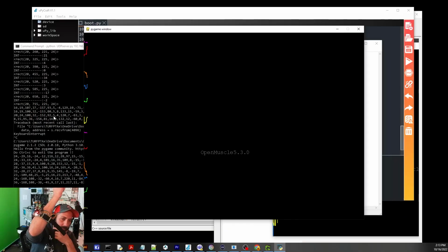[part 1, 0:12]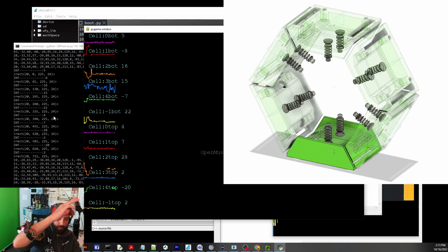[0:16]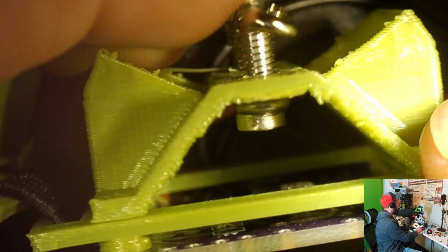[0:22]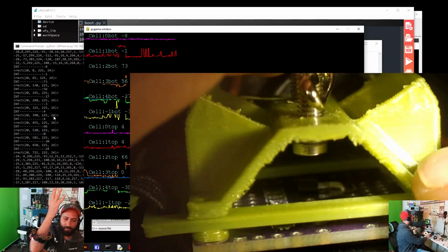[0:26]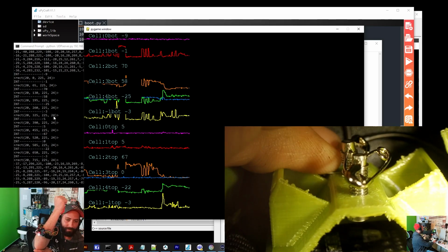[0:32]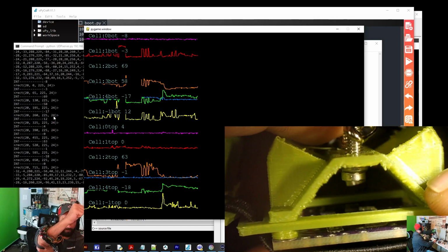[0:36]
So what it's doing is it has 12 pistons on springs that are connected to an earth magnet that is driven to and from a Hall effect sensor. Yes, it's just the best way to detect muscle contractions is with a piston. A piston, a spring, and a Hall effect sensor. Because Hall effect sensors are good at measuring the distance that the magnet has from it. There's redundancy that you can have.
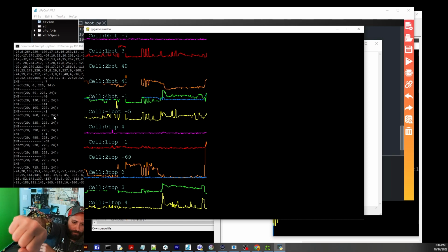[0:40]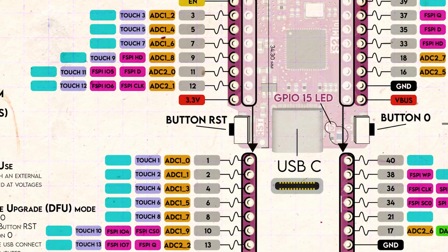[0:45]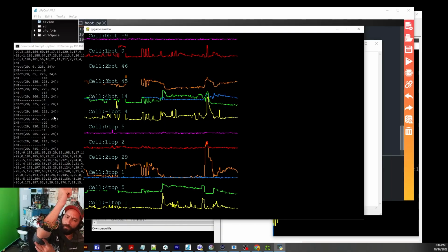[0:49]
It's completely open source. It costs about $9. I'm using the ESP32-S2 by Wemos. The first one, you can buy those for $2 each. The Hall effect sensors, I bought them at 40 cents each on Amazon. You can get them close to 10 cents each. The boards cost $11. I've got 50 of them.
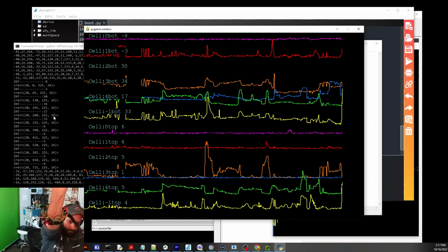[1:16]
And the plastic, I'm not sure. It's just 3D printed. Wires and clevis pins. So the clevis pins are the main mechanical apparatus. Clevis pins and springs. I'm using 20 gram MX Cherry switch springs. And so these are off the shelf components. There is no surface mounted soldering required. You just have to solder the wires themselves.
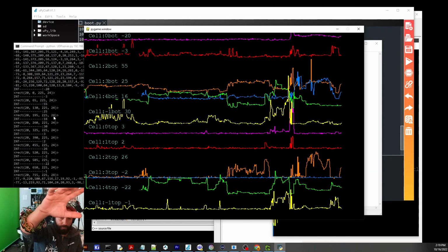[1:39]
So in essence, what this sensor does is it just looks for changes in the topology of your forearm by pressing pistons inward radially toward the forearm. And so when muscles contract, it moves these out of the way, and it's a detectable signal to an ADC. This is with the Hall effect sensors and an earth magnet. It's just ripe for the harvest of people using this for data to make better prosthetics.
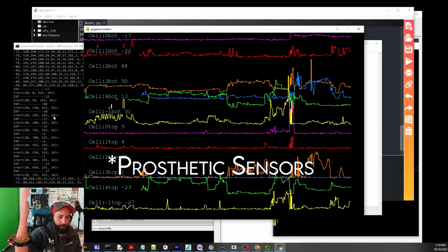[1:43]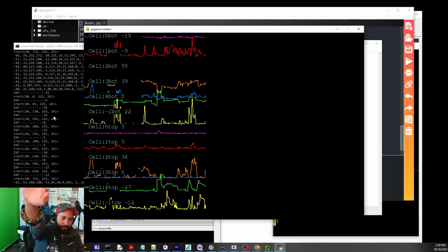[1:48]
That's why this is completely open source. So yeah, everything is available on oprosthetics.org. Follow the GitHub. I've been trying to upload the information.
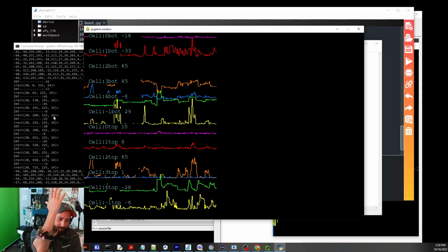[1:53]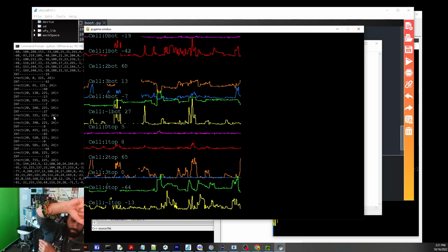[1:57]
There's just a ton of it. It's just me working. I'm looking for anyone to help that wants to. Join the fun. See if we can make a difference in this life.
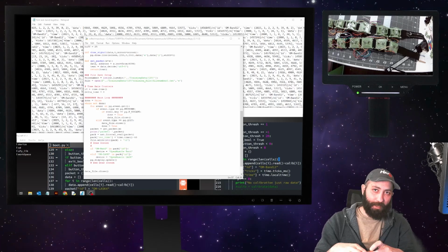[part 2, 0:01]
This weekend, I successfully created the LASK device, which is the label acquiring device. It is going to supply the label to the information that we get from Open Muscle. And so you see two different variations of the 12 sensor module. It's a 12 by 1 sensor where they're all in line, and then a 6 by 2 where they're stacked in cells of two vertically.
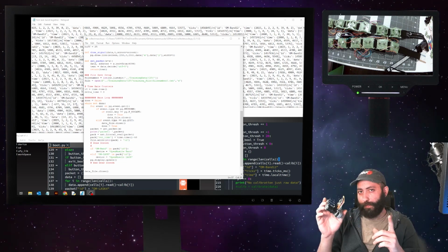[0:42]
The nice thing about Open Muscle is that it has rotational symmetry, so you might be able to glean enough data just from the sensor input to know what orientation it is. It does not have an accelerometer built in. It is meant just to see how accurate you can get with Hall effect sensors for a muscle contraction detection system, and how effective this label can be applied to regression. I don't think we'll do classification, but regression, machine learning, some deep learning, depending on how many hours we're going to have to acquire.
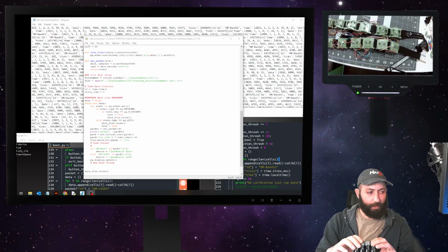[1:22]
The roadmap is quite fun. So we're going to be working on the label acquiring, or LASK, systems. There's this physical system, which is based off of the tension on these springs. And again, Hall effect sensors with magnets, same type of sensor that's on the Open Muscle devices. I'm going to be posting all that. There is already the raw input that I uploaded this weekend, but I'm going to be getting the framework together so that all the data can be sent to a centralized location. Also, I want to embed it in video because you can do some other machine learning label assistance by using gesture recognition with the video that's taken and have the timestamp of the values. So the timestamps are on each device.
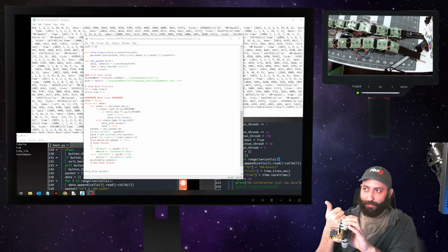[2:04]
So the packet starts, let's just start with the LASK device. It sends an actual dictionary, a string dictionary of the values as one parameter, the ticks of the processor, and the NTP time if it can grab it. And so that will get sent to the central computer. The Open Muscle band will also do the same thing. It will send the number of CPU ticks. It will also send its local time, whether or not it can grab the NTP time. That does seem to fail about 50% of the time. I'll try to rectify that.
And the collection computer, right now I'm using collectmuscle.py that's uploaded into the GitHub repository. That is taking both of those and saving them into a file, and it saves it sequentially into a file that also gets uploaded to GitHub every time I run it. So you can see the data live.
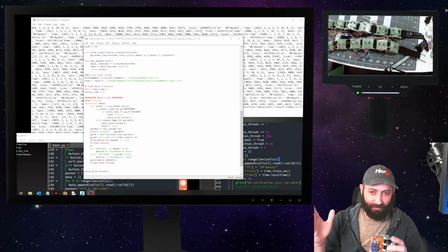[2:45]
I know Hackaday was kind of being cheeky when they said, hey, can we actually log into your Wi-Fi router? Yes, you can, because that's actually another device that I created just to be a middleman between this and the actual internet. So it's nice because these socket servers can traverse firewalls because we're using a port that's pretty high up and it's pretty normal looking traffic, nothing crazy about it. So even if you have a complex system, again, there's lots of refinement to be had in the future.
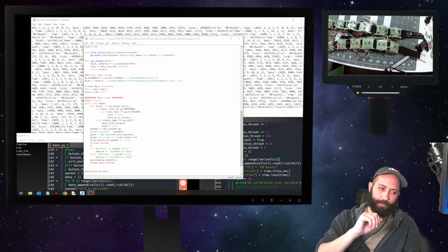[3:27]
I mostly just wanted to give you an update. There is a lot of stuff we're working on, by we, right now, it's just me. Some people have submitted ideas, and that is wonderful. It's helpful, but it's not necessarily the most helpful thing. What's helpful is people that are willing to put in the time to test it out. I haven't spent too much time documenting how to create one of these or this whole thing because no one has asked me to. Once I see the interest, I will start devoting some of my time.
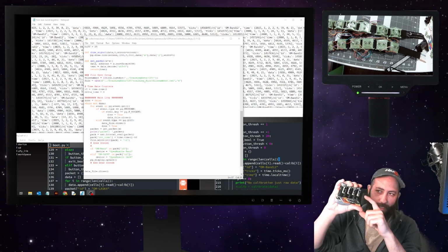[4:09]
But more important is to create a whole infrastructure of code, hardware, and software that people can use to capture machine learning data, right? This data is then to be fed into machine learning to get the intelligible signal from the band. So ultimately, that's why this device is labeling it. It says, hey, this finger is moving and it has to exert X number of newtons of force to press in, or compress, this spring. And that is pretty helpful. So that value we're just assigning in between 0 and 1, 1 being pressing down as hard as you can, 0 not pressing at all.
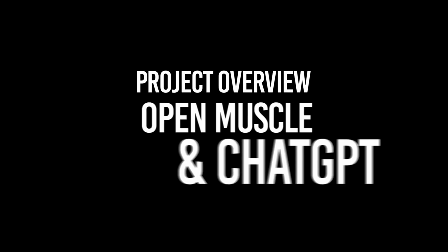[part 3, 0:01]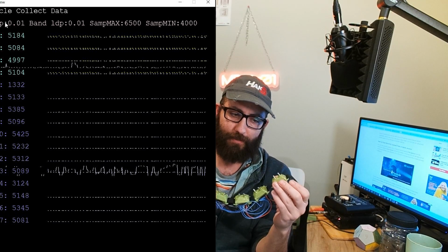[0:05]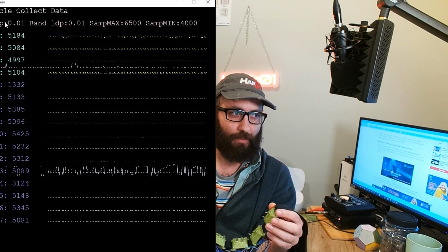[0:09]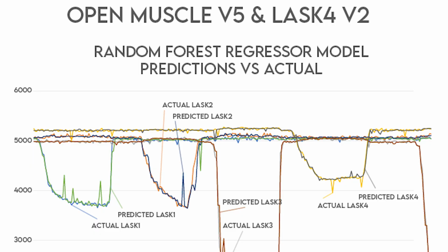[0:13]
For the open muscle project, we developed a low-cost sensor system for both the forearm muscles and for finger movements. We evaluated machine learning models to determine the efficacy of their predictions given our feature and label dataset. Getting clean and relevant data was difficult, and we had to adopt a more quantized or bite-sized approach.
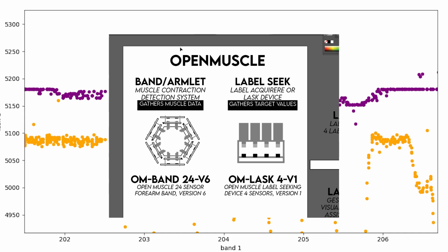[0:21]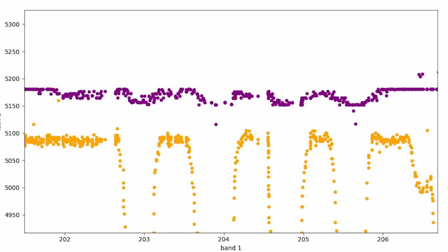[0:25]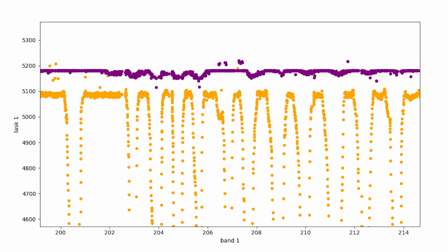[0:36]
Full disclosure, mostly this is just a team of me, ChatGPT, and a couple of friends that I bounce ideas off of. But finding an inexpensive bracelet design that was relatively low cost was cumbersome, and some open source projects were actually tried before the creation of the LASK system and the open muscle band.
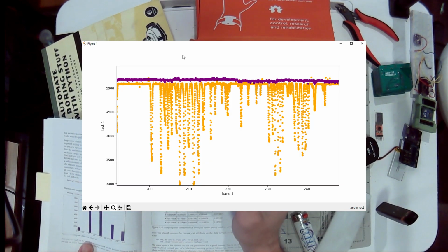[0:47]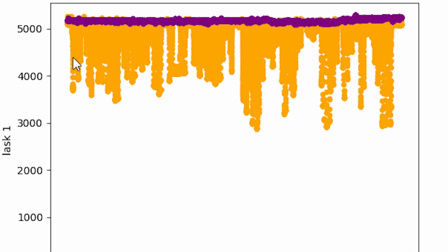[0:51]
The whole project rested on the idea that machine learning or artificial neural networks would be the one to tease out the meaningful data from the sensors located radially around the forearm muscles in a band form. This was, from inception, the way that we were going to determine which finger the person was trying to move.
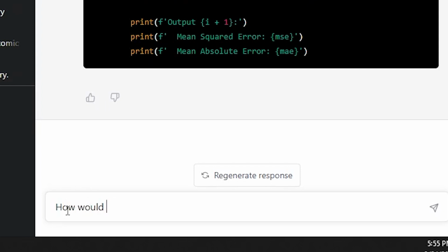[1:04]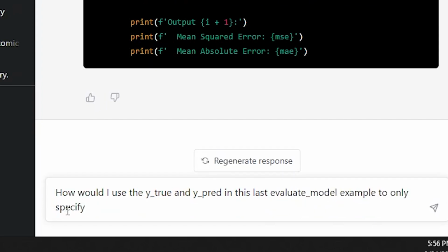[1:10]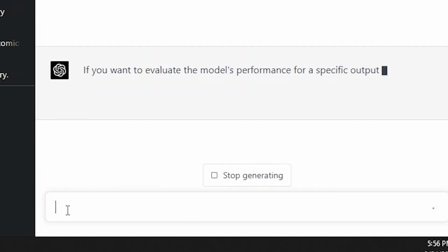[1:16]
The role of ChatGPT was paramount. It provided feedback for advanced machine learning questions. It provided sample code based off of my supplied parameters. It gave me advice for finding the right type of model to fit my already predefined data points. ChatGPT also helped with the outline for this video and to write articles based on my findings.
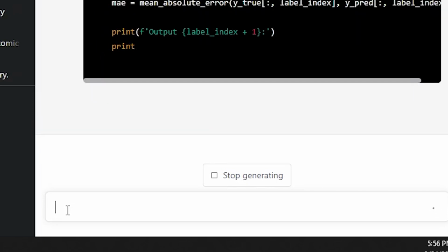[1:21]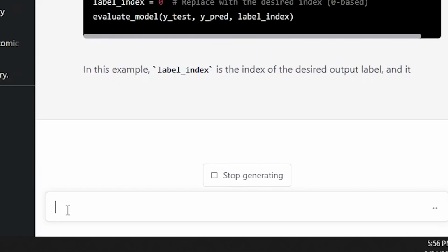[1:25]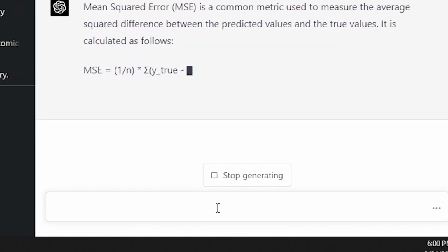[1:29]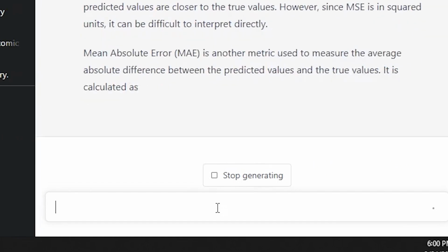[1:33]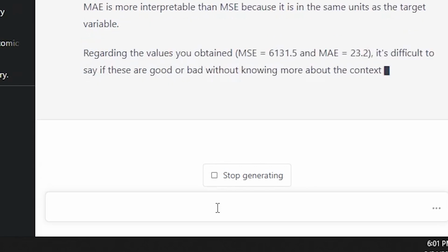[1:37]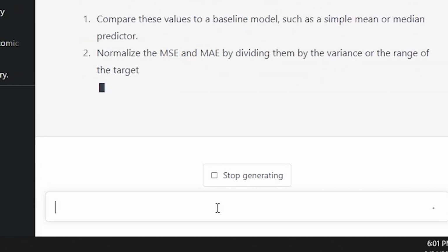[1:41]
The accuracy of the model was also found by asking ChatGPT what the output meant and how it could be improved. The greatest task that GPT-4 assisted me with was actually debugging the code, because I used some of the sample code that it provided. Most of it was written entirely by me, and I just simply copy and pasted the error output, and it was quick to identify the cause and a potential solution.
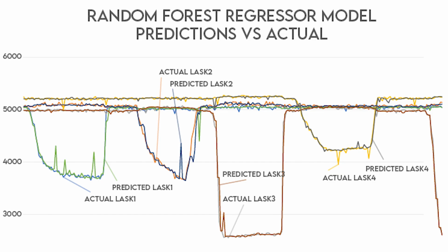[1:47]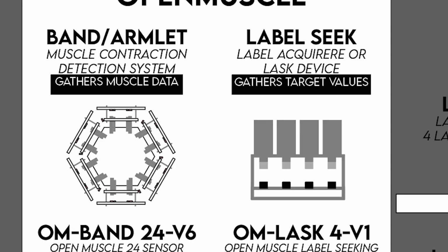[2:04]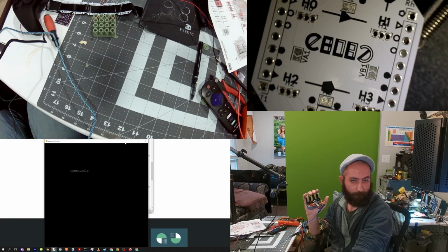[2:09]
The data collection and model training process were relatively straightforward. I had already constructed the basic operating system for the open muscle band and the LASK system to send all the data over UDP packets. All these UDP packets were sent, and a receiving program that was a Python listening program converted those into JSON values that were saved in a text file. From that text file, they were converted to a CSV file, and they were matched in pairs, and some of the data was omitted. Overall, we received about 100 samples per second, half of which was thrown out.
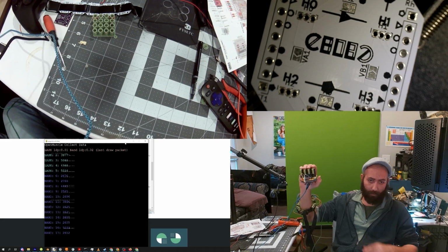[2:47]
Once I had this data set in a program, GPT-4 suggested three different training models for my data. At first, it only had me enter in one variable and one output, so one feature and one label. I specified I had 12 sensor datas, each with a timestamp, and 4 label datas with a timestamp as well. It provided generic code that I was able to modify and successfully train 3 different models.
The first of which was a logistic regression. The second was a SGD classifier. I wanted to see the training progress. And lastly, the random forest regressor was ultimately the one I used to proceed for the rest of my project.
The training dataset was small and only 10 megabytes in size, and taken over the course of about 5 to 10 minutes. The data was not very large, and it was just a preliminary test to see how the whole process worked. The noise from the open muscle band was significant, so the error rate was not expected to be very good from the start. It was almost a worst-case scenario going in.
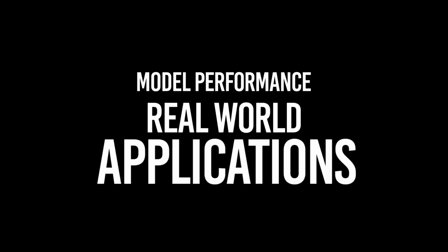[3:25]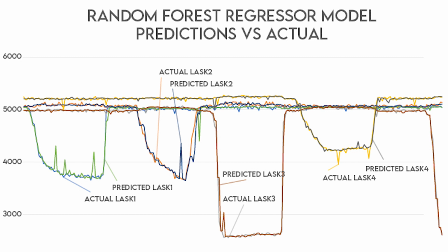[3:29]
Model performance in real-world applications. The mean average error after I did the initial training was roughly 25, which equates to a 12% error rate, given that the output for the LASK system was in between 5200 and 5500. This was done on an 80%-20% split like normal, where we trained it on 80% of the data and 20% was used to test it.
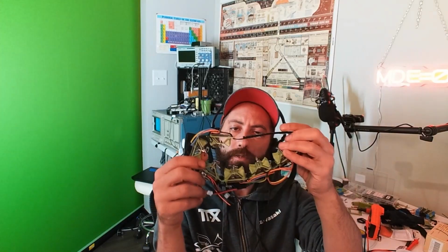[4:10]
After the model was trained, it was saved using the Pickle Python library. The model was then able to be used for live predictions. ChatGPT did give a decent outline of this process, but most of the code was done by me, and ChatGPT-4 mostly helped with troubleshooting, and it did so quite effectively.
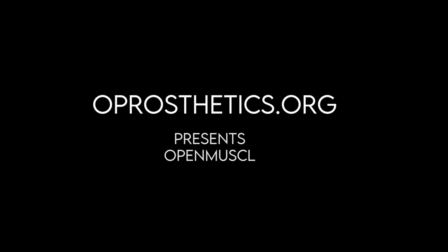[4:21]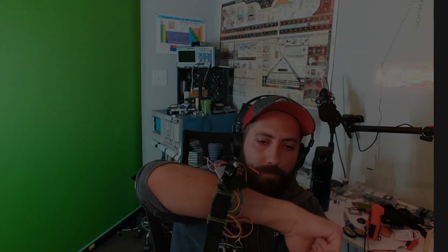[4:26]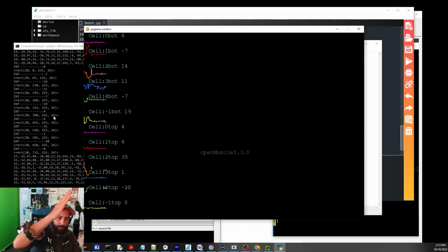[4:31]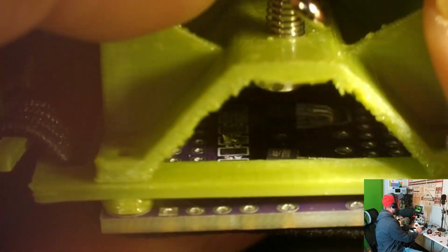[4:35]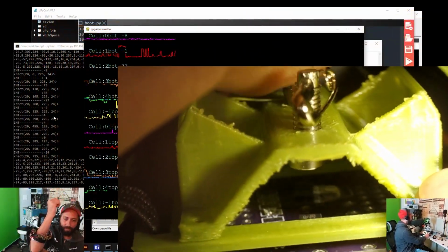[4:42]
I started this project knowing just that other machine learning systems, given their input and their output, could easily be applied to the biometrics or the prosthetics industry. The impact of this system, having been able to detect finger movements on a noisy sensor with minimal training data, shows a giant potential. Low-cost sensors for prosthetic devices and a system that helps anonymize the data and host featured and labeled data for everyone could be used to provide an impact to help many people and the industry as a whole. I want you to tell me what you think.
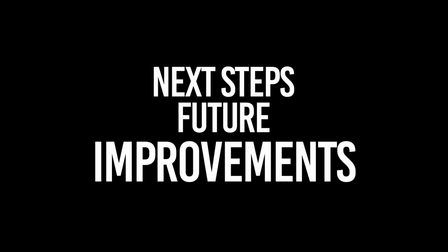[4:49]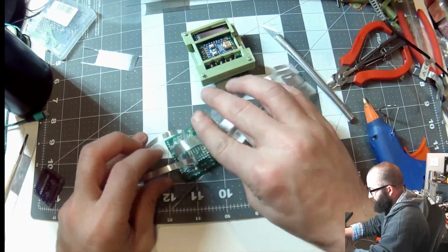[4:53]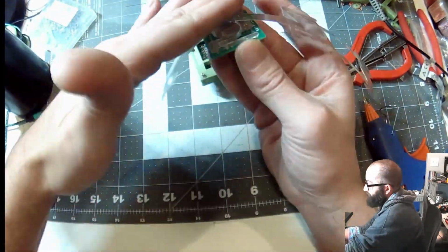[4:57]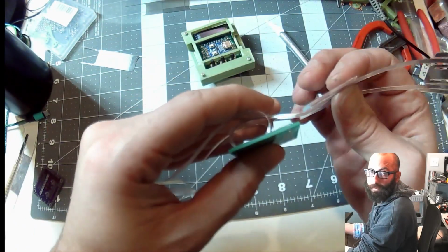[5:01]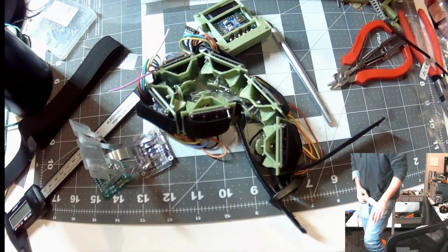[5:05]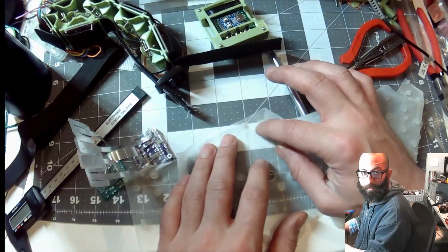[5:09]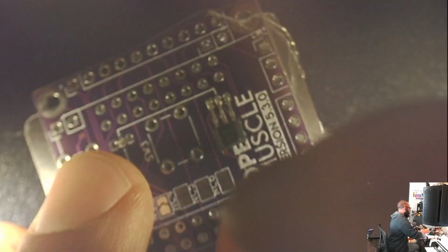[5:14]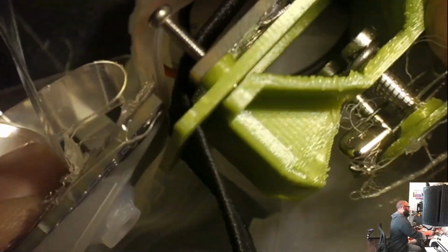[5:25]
The role of AI and ChatGPT is revolutionizing the prosthetic technologies industry. AI has advanced to help reduce the sensor cost for prosthetics, and helped me to find the right library and model to train my own neural network. It also enables individuals such as myself to take on a project that usually an entire team would have to devote their time to.
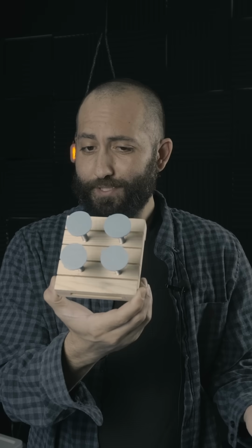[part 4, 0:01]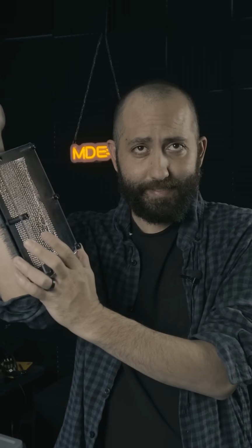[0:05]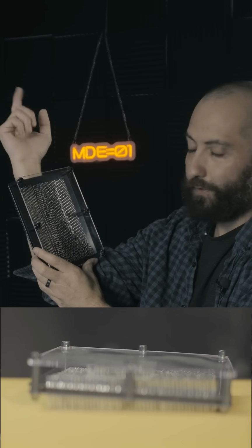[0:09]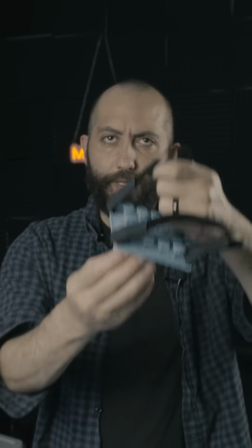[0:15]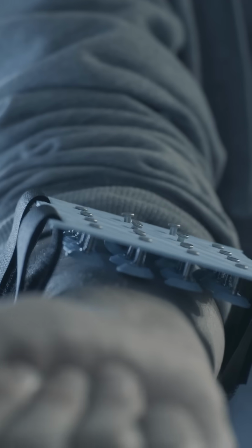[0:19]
These aren't just pressure sensors, they're a bit more clever than that. As a kid, I had a device like this, and I thought, what if we could actually measure the movement of muscle contractions, not with an EMG or an MMG, but with a type of pressure sensor? So I decided to build a matrix of pressure sensors, one that I could strap to my forearm, and see if I could discern different movements.
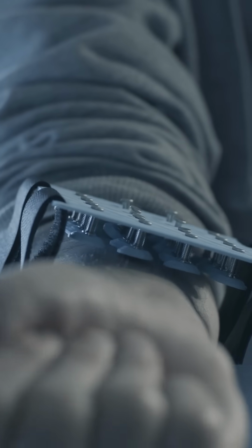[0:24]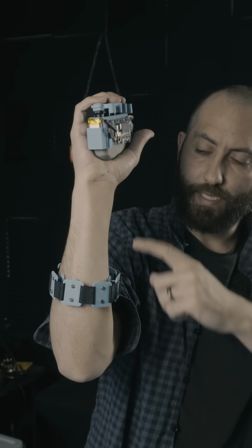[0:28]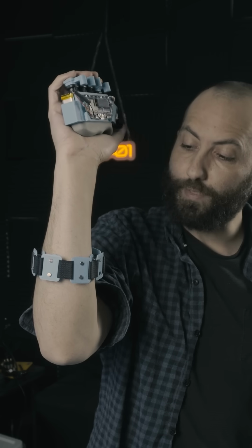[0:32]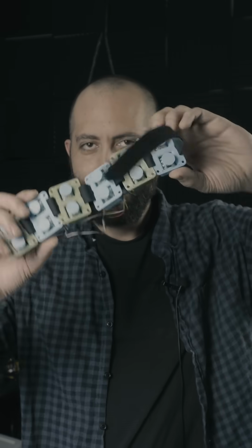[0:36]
But that's not enough. We also want to label the data, so that way we can tie the two data sets together and see if machine learning can tease apart some individual movements and even predict it. So here comes the open muscle band. Now these are made of 12 pressure sensors. You tie these two together and you can predict finger flexion and extension.
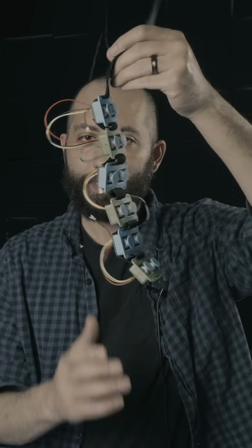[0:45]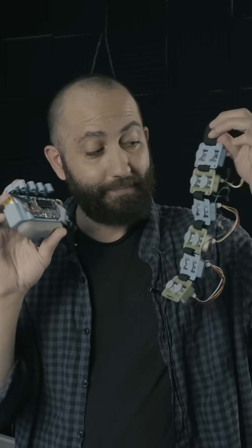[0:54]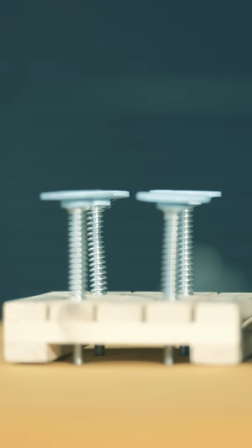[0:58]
But I am constantly upgrading the hardware so these kits can be available to anyone that wants them. I'm releasing them both open source and open hardware, so the schematics for the PCBs can be found on the GitHub repositories.